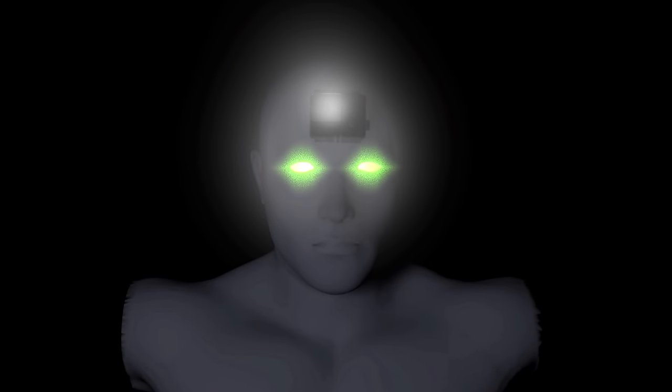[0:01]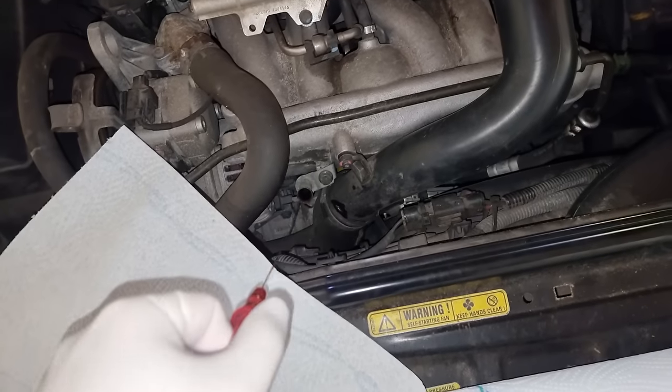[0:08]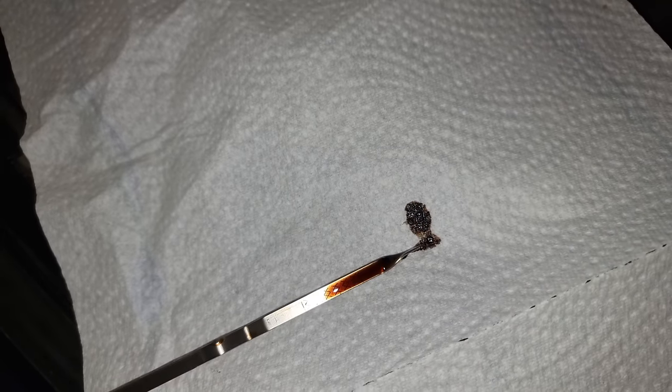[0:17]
Hey guys, I'm preparing the Volvo for a little long road trip to Switzerland, where a viewer has offered me a very interesting but non-functional laser system. I think Volvo is going to survive.
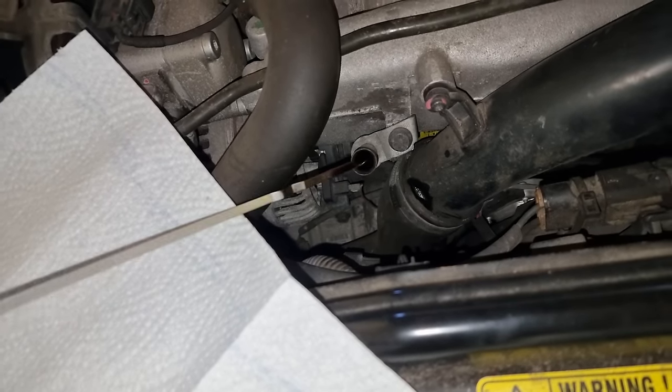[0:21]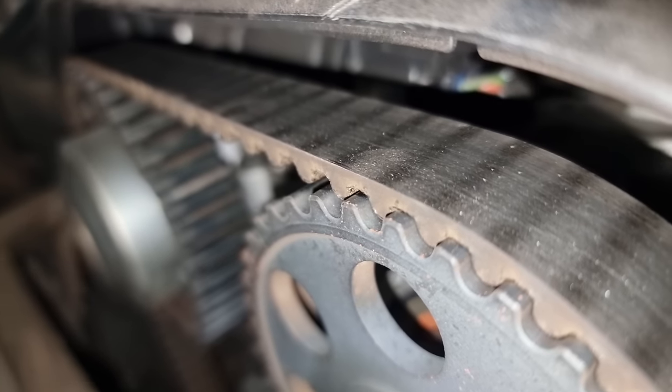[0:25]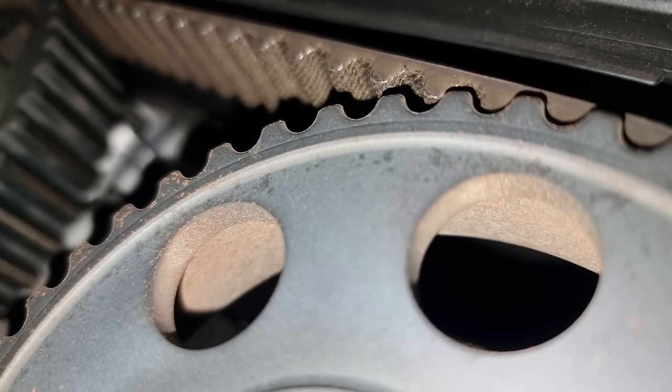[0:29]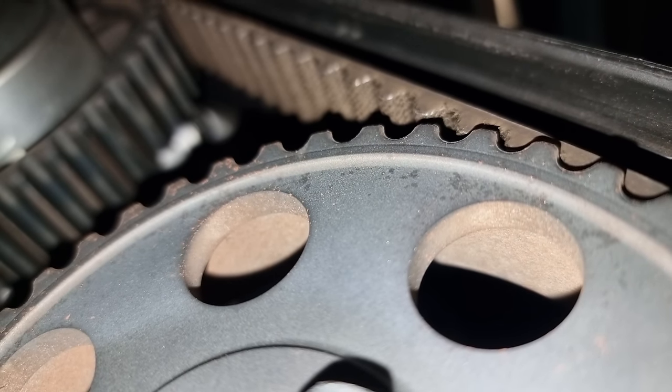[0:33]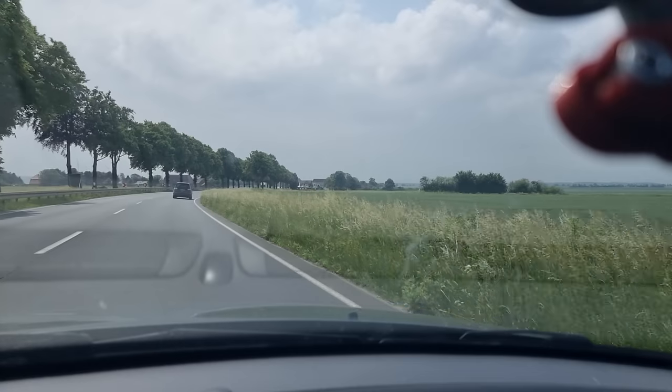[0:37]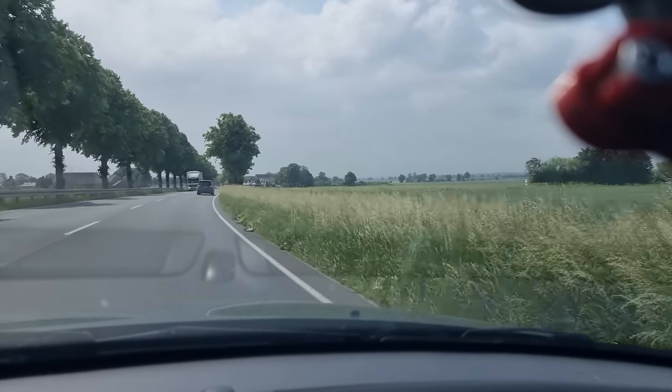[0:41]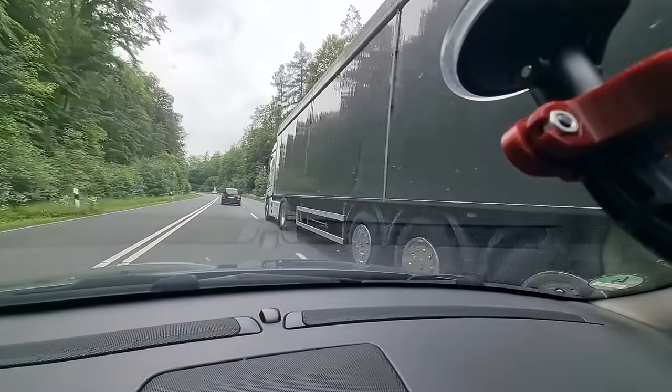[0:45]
But this part of the video happened over 2 years ago during peak COVID, and I had no idea what crazy bureaucratic hindrances might await me at an international border crossing. To make matters worse, even if I made it through one way and everything would go according to plan there, I would have to return to the European Union afterwards, with laser equipment that used to cost as much as a small house in my trunk. Surely that's not going to cause any taxation or customs issues, right?
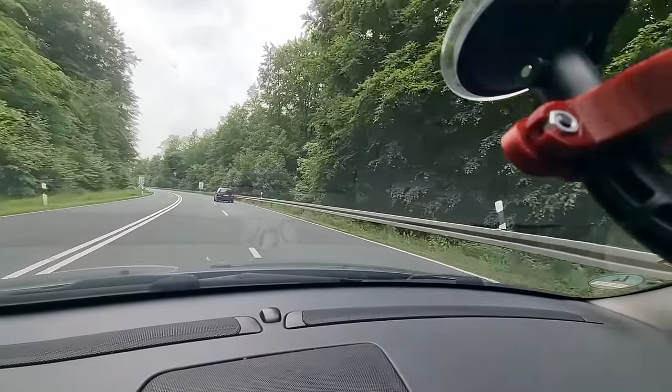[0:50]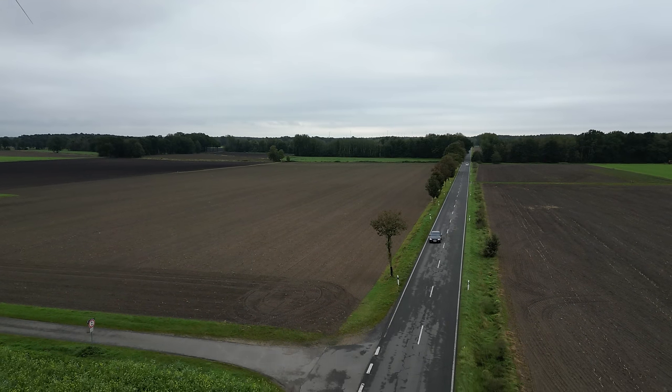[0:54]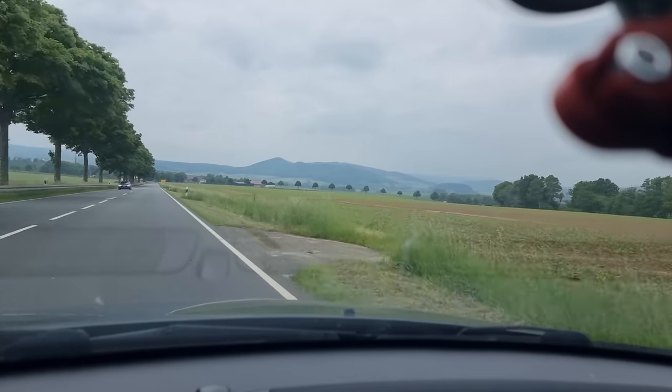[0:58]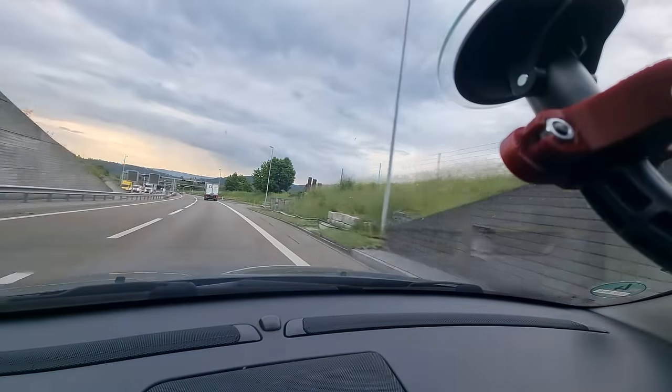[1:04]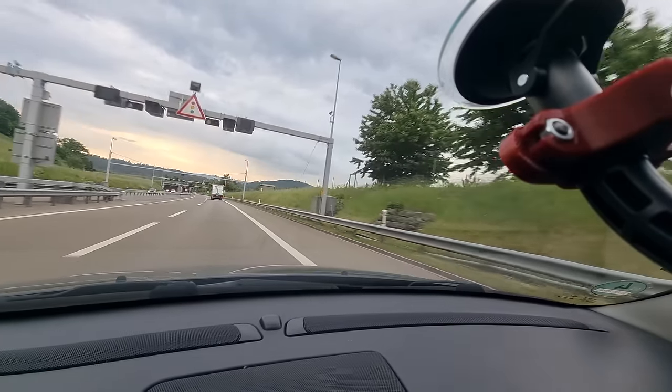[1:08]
Oh well, there's no point in worrying, is there? Although I have at least an 8-hour drive ahead of me, with little else to do. Still, I love these luxury e-waste recycling missions. How about I attempt to explain what exactly has me excited enough to set sail for such a perilous journey? Lasers. Need I say more?
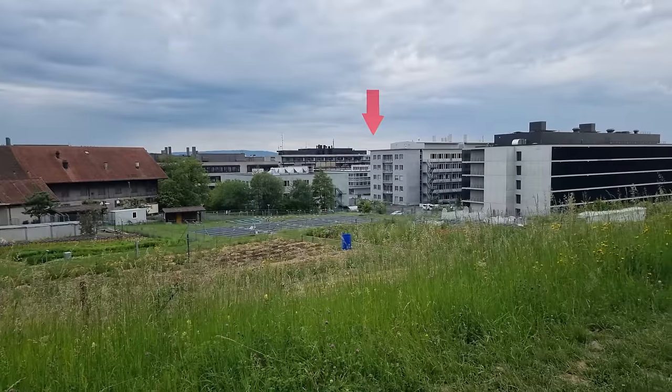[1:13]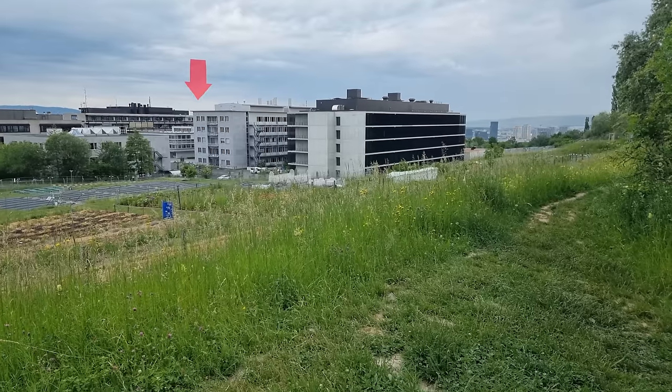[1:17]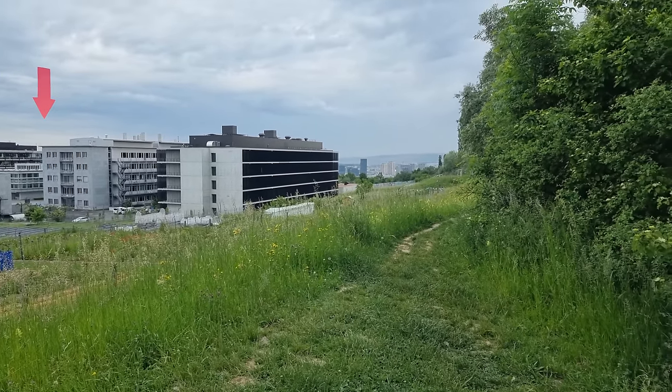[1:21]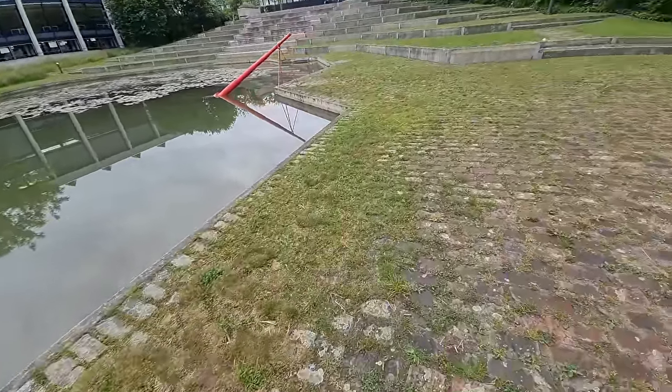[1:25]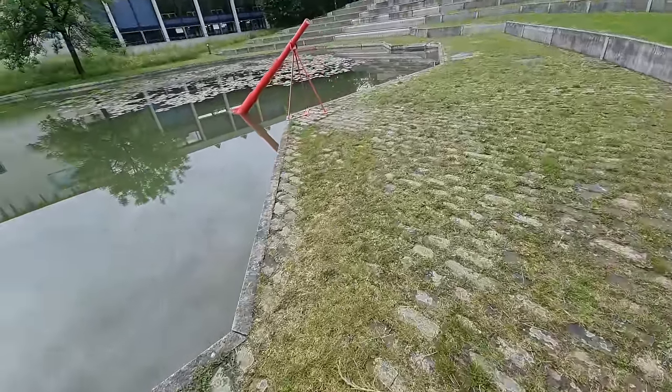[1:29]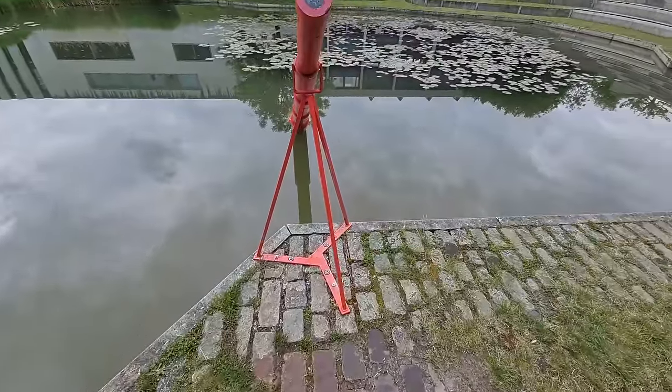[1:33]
Okay, so we're heading to a neuroscience institute at the University of Zurich. Not for treatment of a manic laser acquisition disorder, but to help a postdoc researcher with the disposal of some old broken equipment. What use have neuroscientists for fancy coherent light sources, though? I mean, where I'm concerned, nobody has to justify an interest in shiny, colorful toys or magic crystals. But I think here it's mostly about fluorescence microscopy.
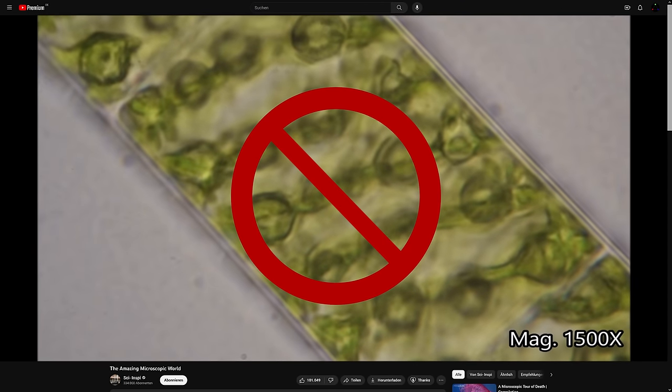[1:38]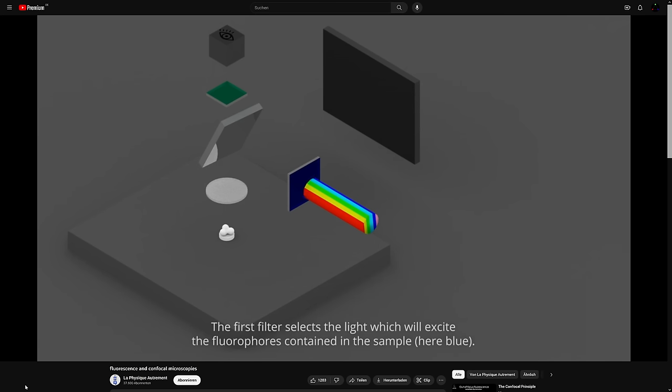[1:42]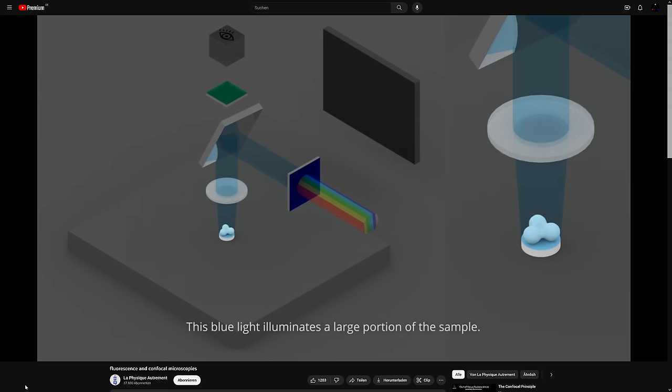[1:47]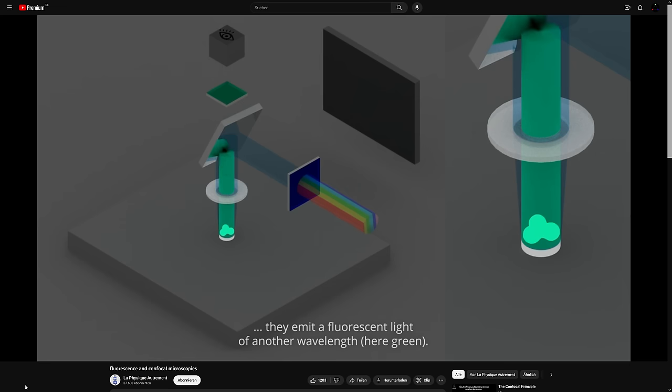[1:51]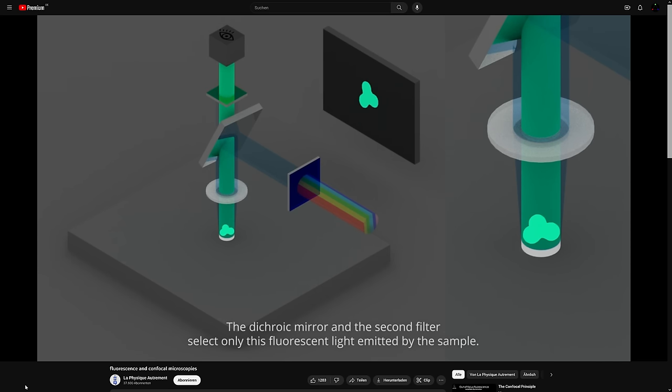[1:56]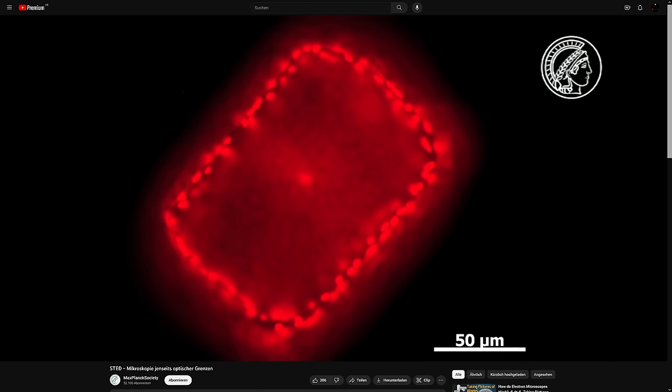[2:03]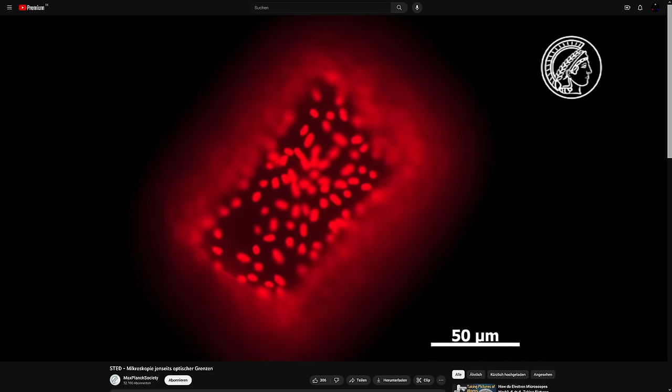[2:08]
Instead of shining broadband light onto or through a sample, one can dye it and excite that dye with a specific light wavelength. That causes the dye to emit light on its own, which a scientist can capture as a much higher contrast image. Only the re-emitted energy and therefore wavelength will be a bit lower, because a portion of the excitation energy is lost as heat. Unfortunately, samples usually have some thickness and transparency, which is why in wide-field fluorescence microscopy, out-of-focus features will also show up and cause blurriness called background fluorescence.
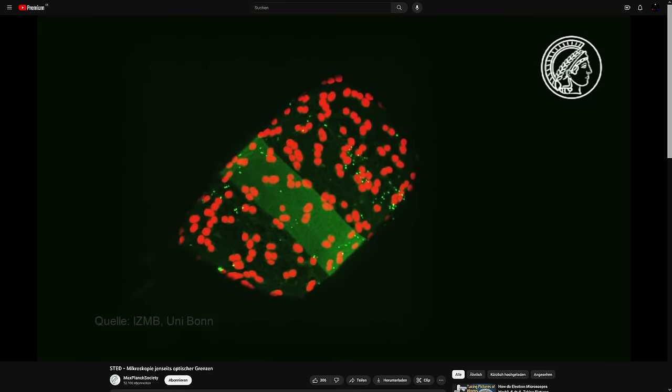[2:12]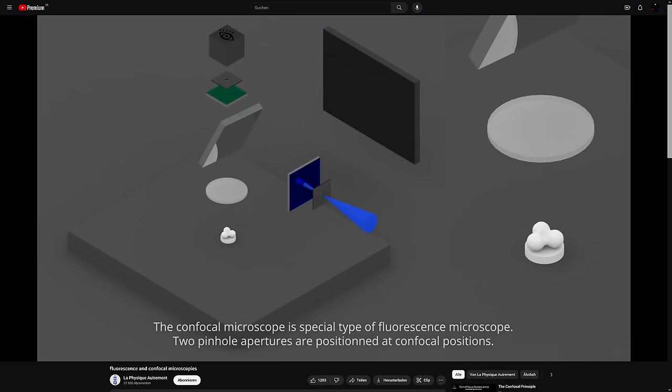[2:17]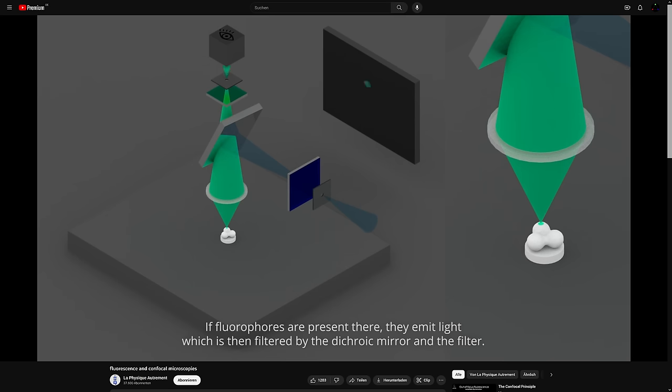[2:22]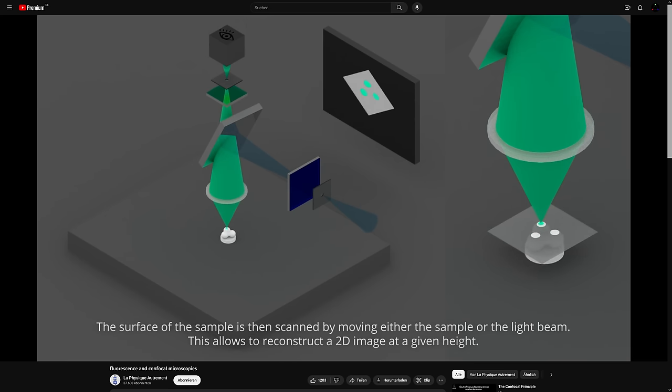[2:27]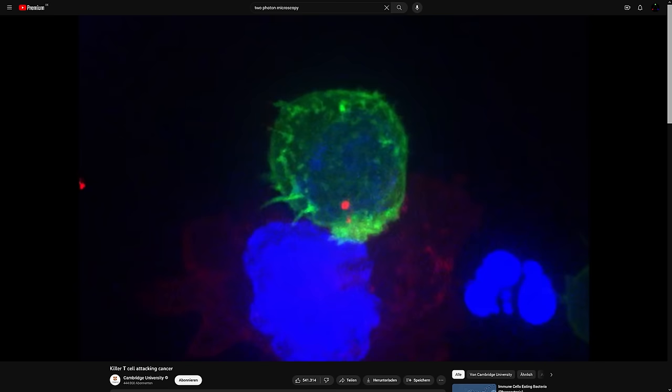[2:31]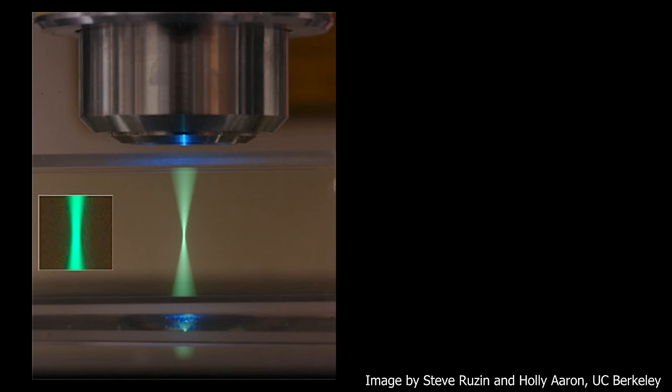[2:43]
There is an extension to this method called confocal microscopy, where pinholes are used to excite only a small volume of the specimen and to strip away all out-of-focus fluorescence. Confocal microscopy is a fairly advanced technique already, and it can yield fantastic results. It's a pointwise process though, and it takes a while to scan over samples at high resolution. Meanwhile, in order to reach deeply into a sample, the excitation is done with a fairly intense laser beam of a fairly high energy short wavelength, so that the re-emission falls into a convenient band for imaging.
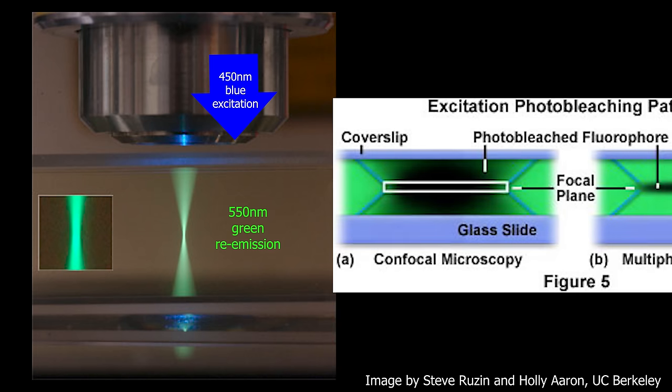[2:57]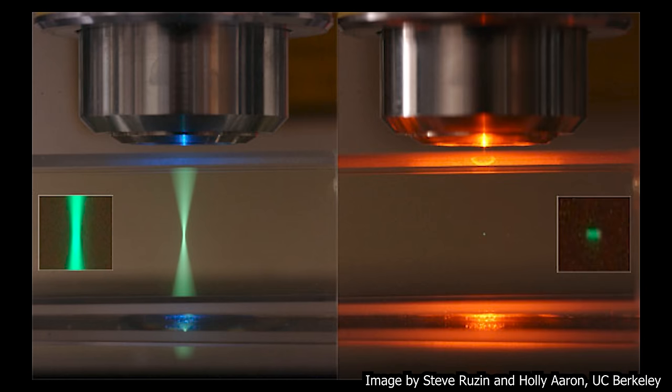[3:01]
And we all know, better than most, what happens when intense laser light touches anything, especially for a longer time. The sample can be damaged or the dye degraded, not only in the focal plane but also above and below. Wouldn't it be wonderful if we could unlock yet another improvement for this light microscopy technology tree? Well, now that you mention it, this is exactly where the laser system that has lured me all the way down to Switzerland enters the story.
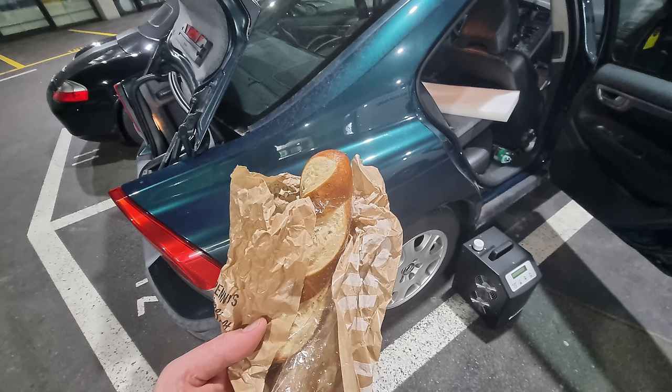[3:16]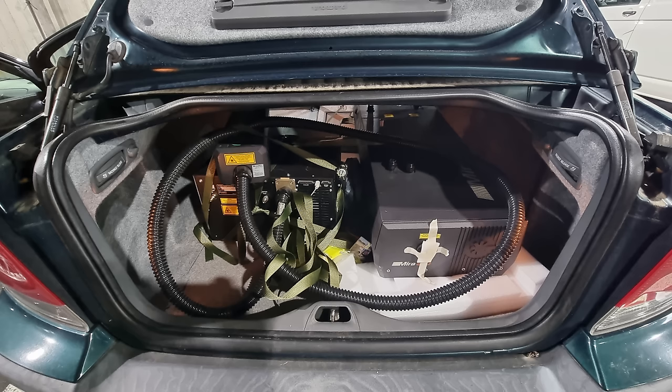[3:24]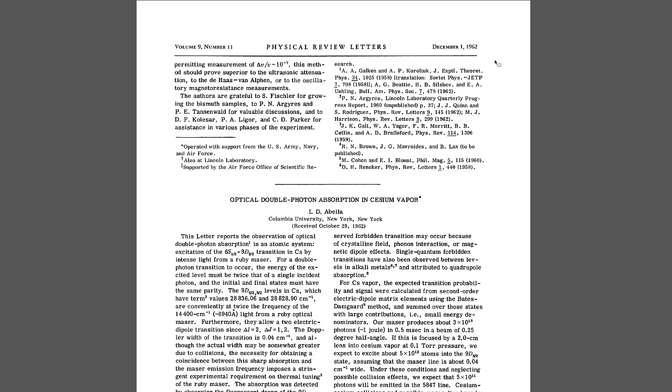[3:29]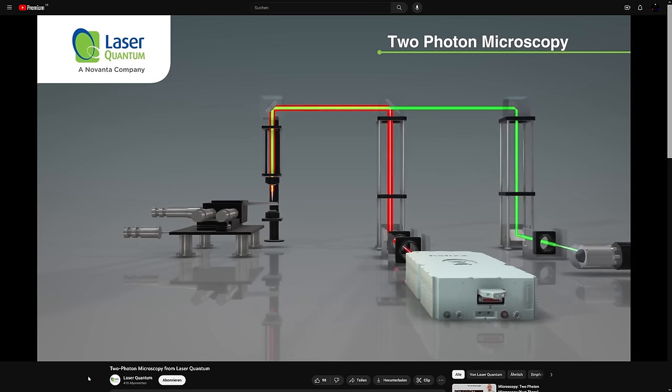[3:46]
If we can revive it, it will be able to compress laser radiation into ultra-short impulses. It may only have about a watt of average power, but compressed into less than 200 femtoseconds and focused into a small point, it can cause light intensities of mind-blowing and reality-shattering proportions. Well, reality has probably always worked this way, but it has only been confirmed in the 60s that at such high intensities a molecule, such as a dye or other interesting stuff, has a chance to be excited by two photons that arrive in close enough succession.
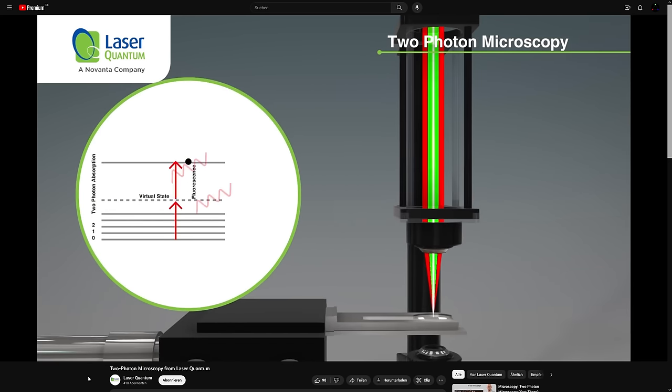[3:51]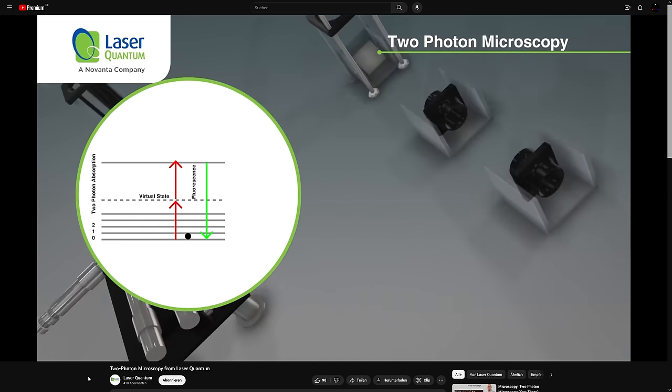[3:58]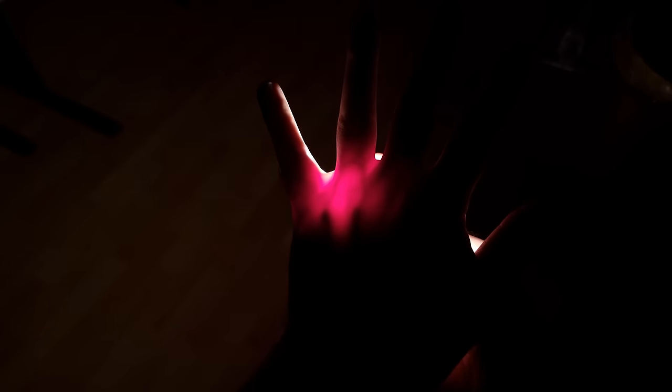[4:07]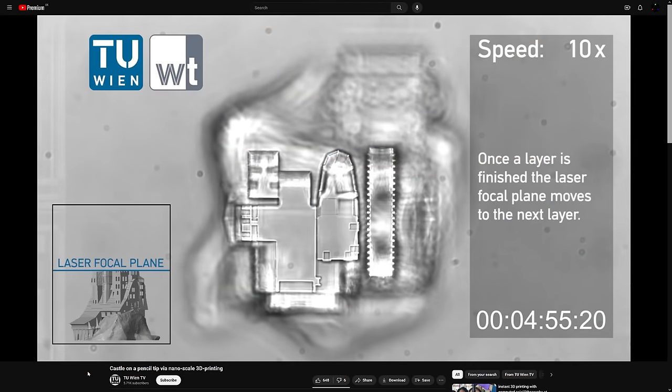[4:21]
If that happens, the molecule receives the energy of both photons, just as if it had absorbed a photon of twice the energy or half the wavelength. The implications for fluorescence microscopy are fantastic. We can now send ultra-short infrared impulses into a sample, which are least encumbered by biological tissues. Only in the focal point, deep within the sample, where the intensity is at its maximum, do two-photon absorptions happen, as if there was blue, half-wavelength, twice-energy excitation light there. No photobleaching and much lower risk of sample damage elsewhere.
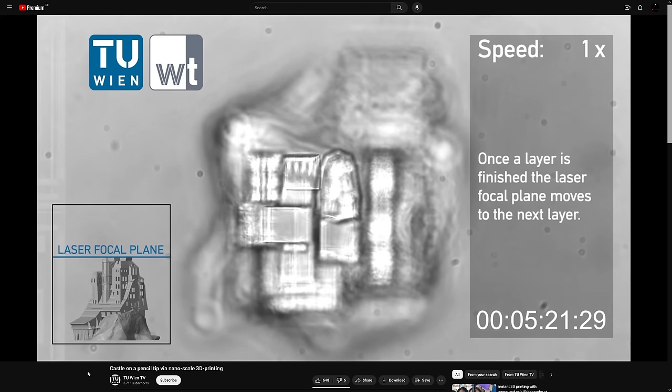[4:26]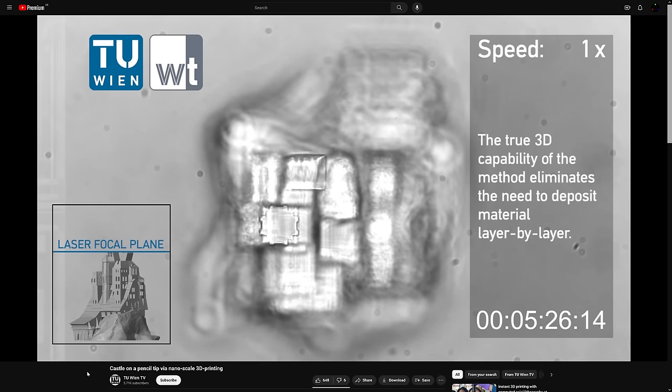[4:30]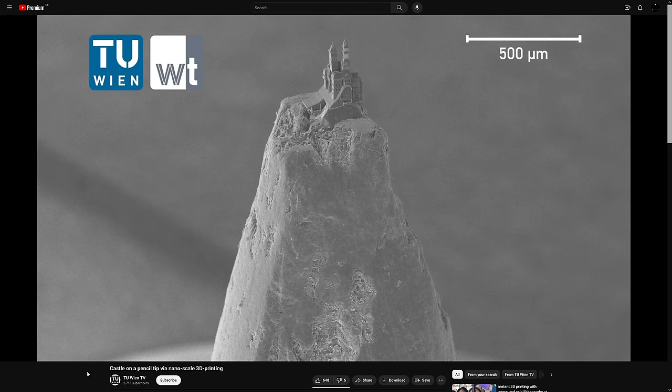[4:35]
Or we could trigger polymerization of UV-sensitive 3D printer resin, simply in the middle of a vat without repeated peeling and wasteful support structures. But let's not get ahead of ourselves too far. There are a few tricky problems in the way.
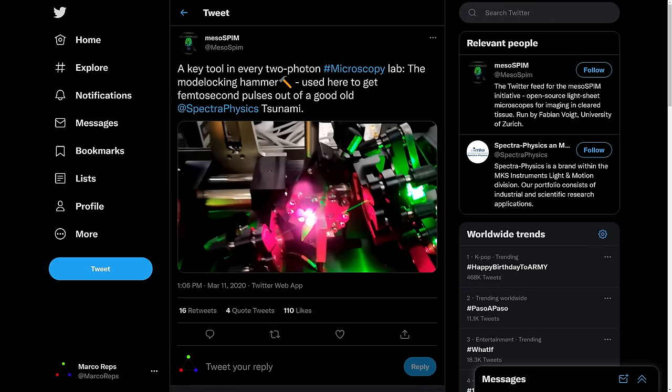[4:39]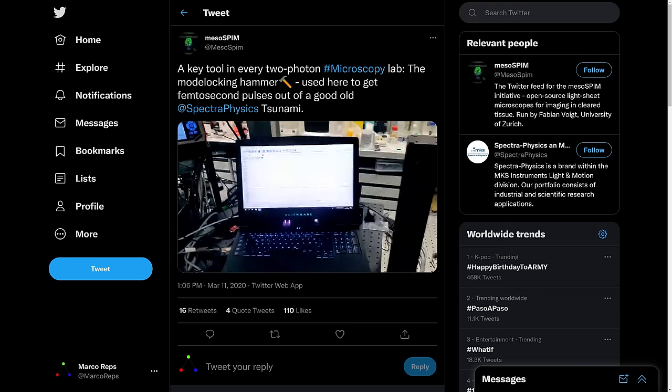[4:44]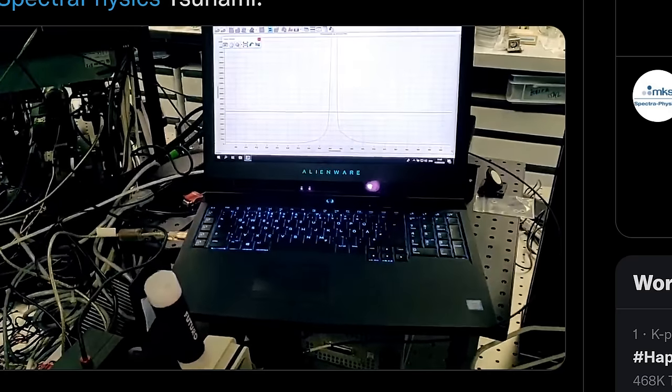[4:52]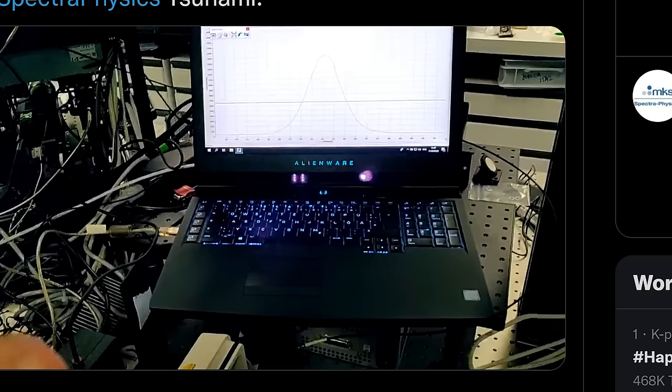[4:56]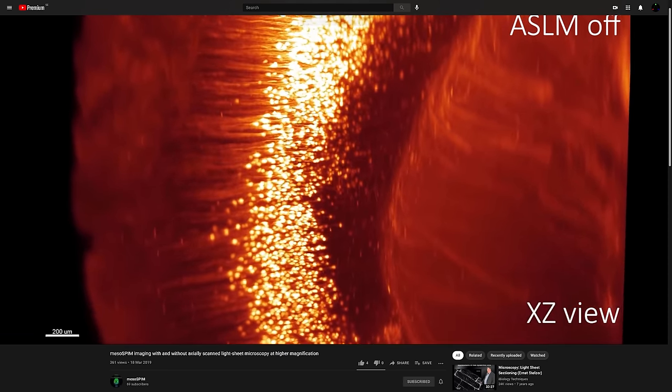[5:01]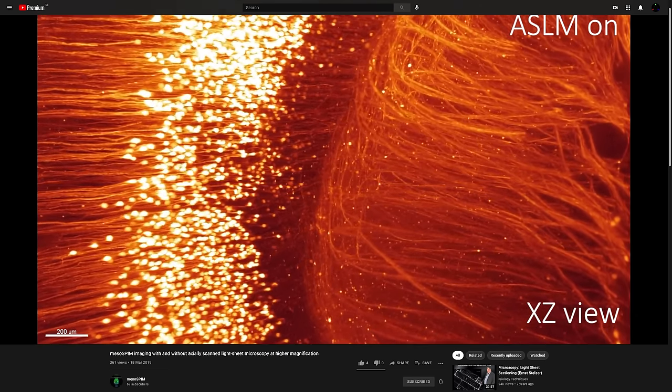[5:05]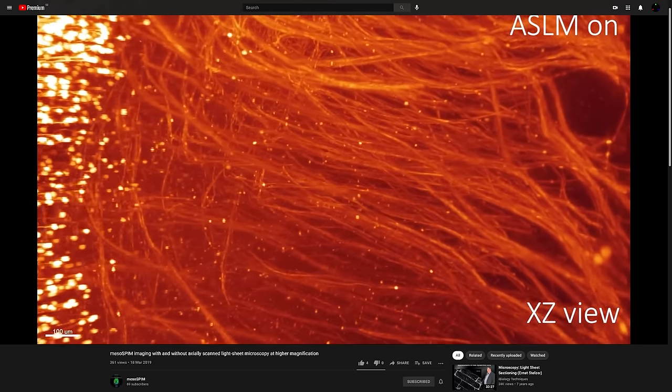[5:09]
He's now a Human Frontier Science Program Fellow and working at Harvard on leading-edge neuroscience and imaging tools. He has also initiated an open-source hardware light sheet microscope, making faster 3D imaging of cleared tissues available to scientists all over the world. I'll leave a couple of links to his work below if anybody has developed a taste for life science.
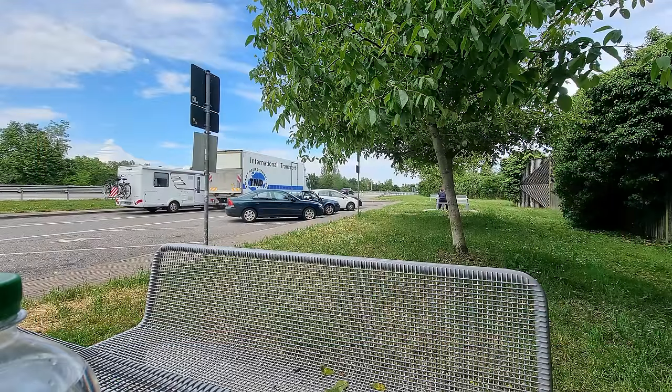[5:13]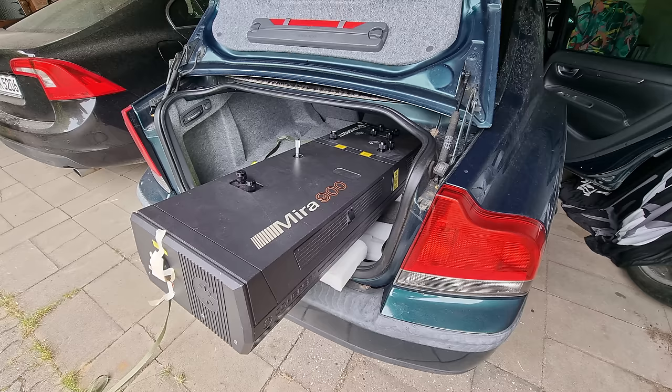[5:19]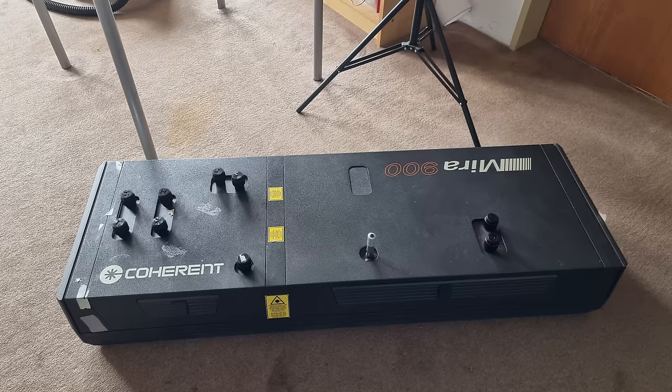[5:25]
Personally, I think I'm going to stick with e-waste recycling for the foreseeable future. My journey through customs and back home was blissfully uneventful. And so, finally, after 5 minutes of incoherent rambling, we can get to the point.
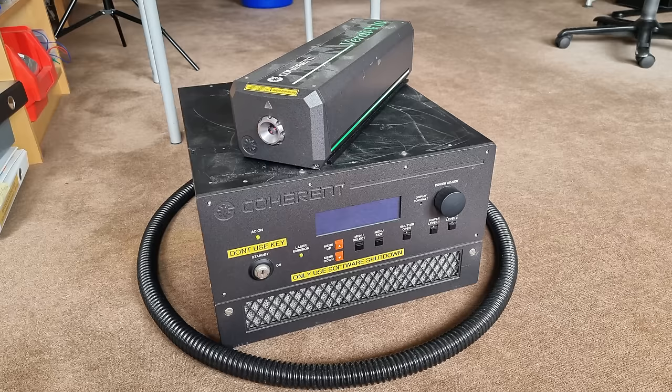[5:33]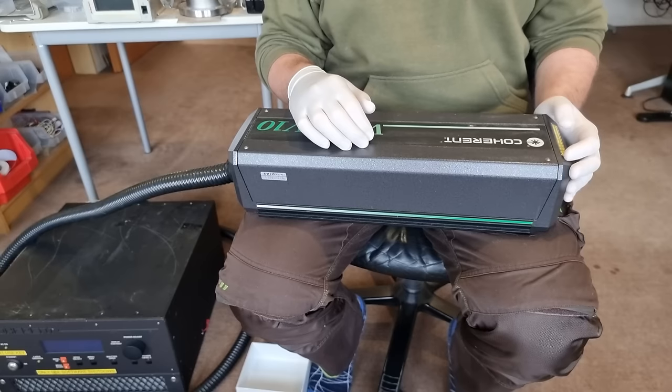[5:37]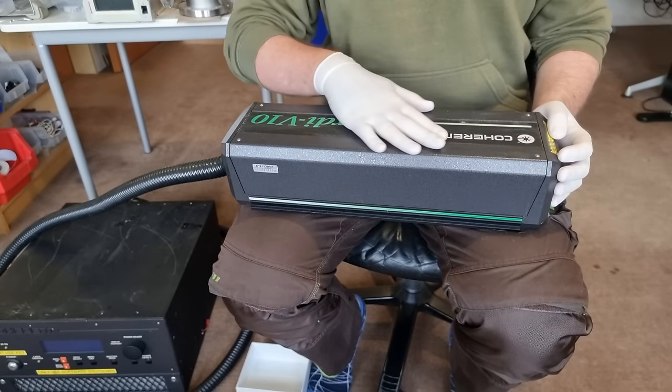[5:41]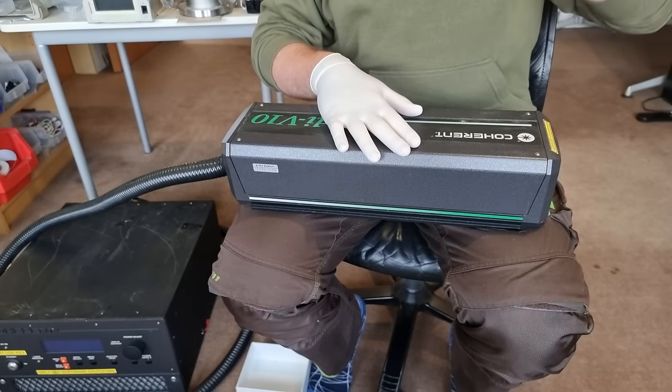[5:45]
This is the loot, a Mira 900 ultra-fast titanium sapphire tunable laser, and a Verdi V10 solid-state continuous wave green pump source. These two belong on an optical bench together, and then this baby is supposed to put out a few watts of spectrally pure green light to pump the magic crystal in the other box. Let's focus on this Coherent Verdi V10 today.
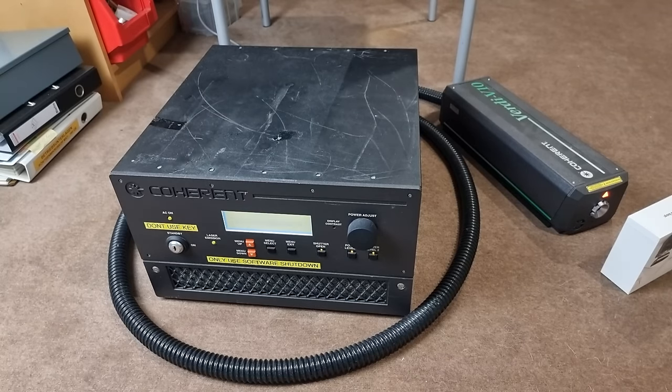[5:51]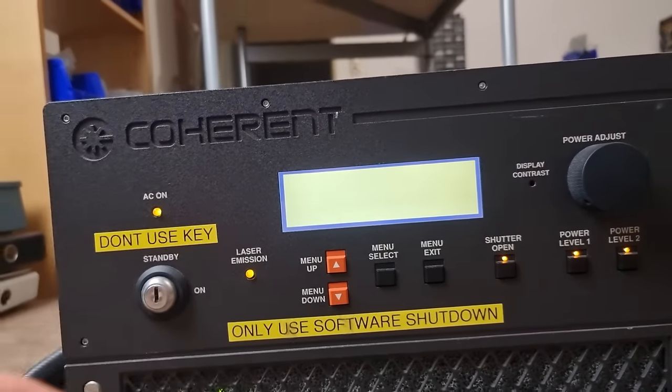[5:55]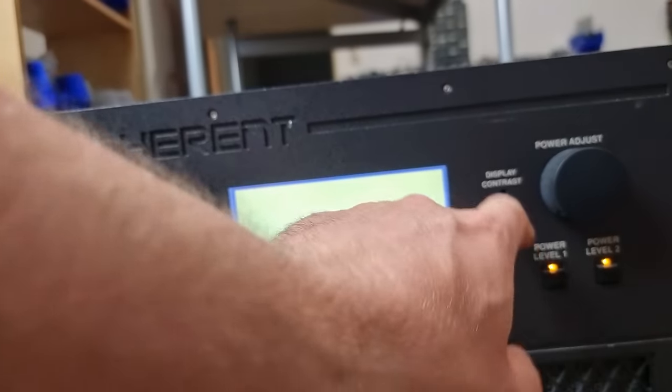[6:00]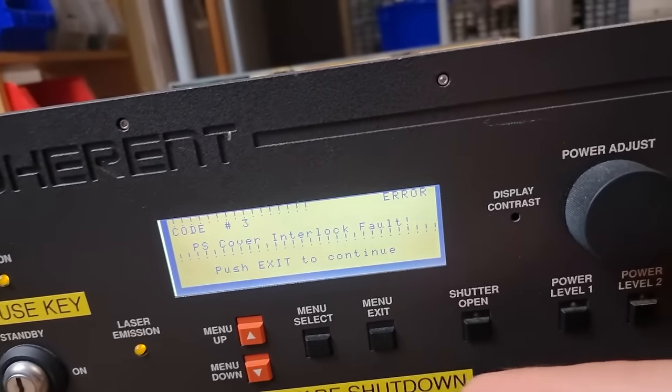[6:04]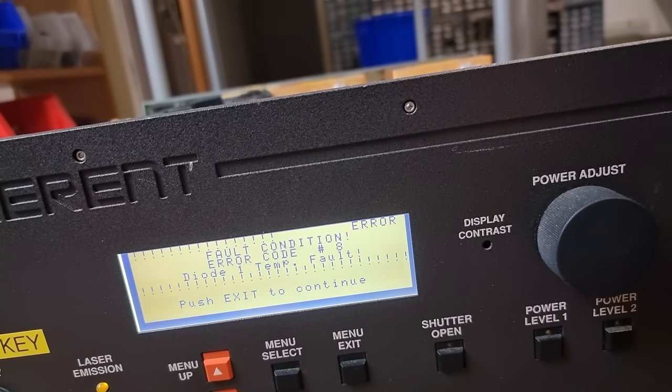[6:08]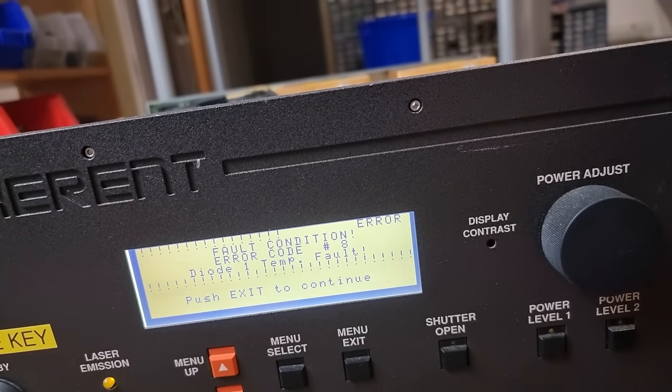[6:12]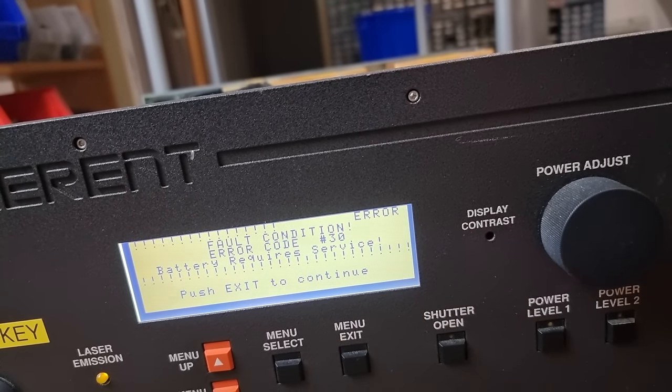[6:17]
It is not happy. If I remember correctly, it was already destined to be scrapped before the neuroscience department adopted and revived it. Now it doesn't display anything anymore most of the time, and if it does, it's throwing its entire repertoire of error codes at me. Whoa, take it easy with the exclamation marks, buddy. This is good though. Electrical problems are the ones I can fix. It could also have damaged obscure optical components in the head. That would be more challenging.
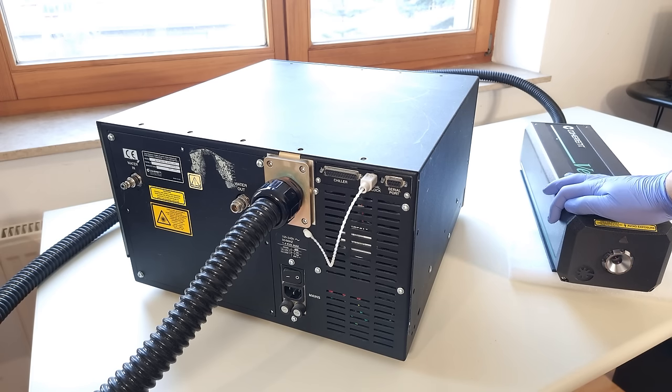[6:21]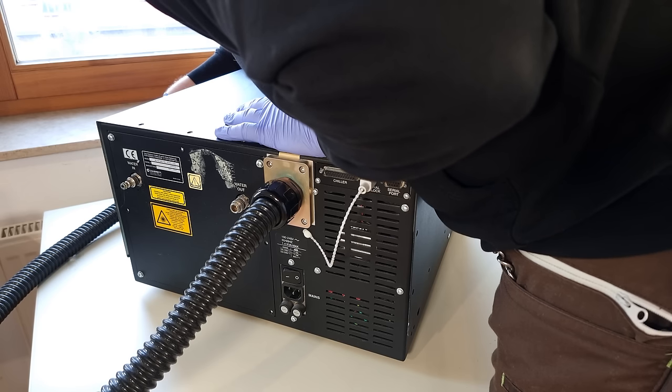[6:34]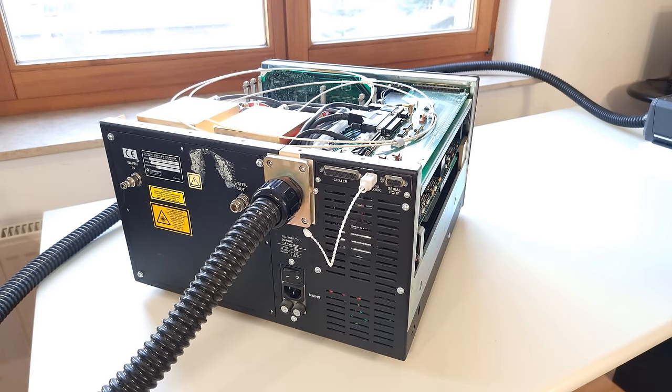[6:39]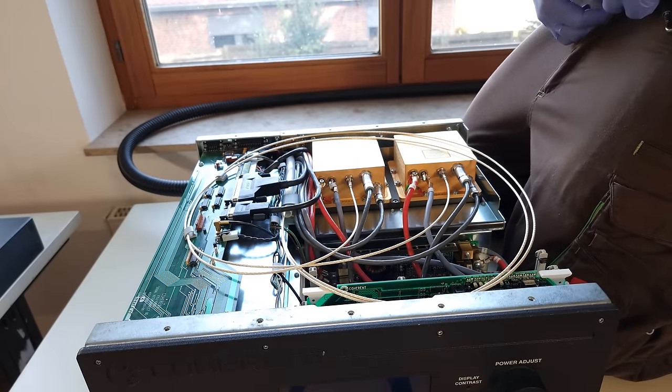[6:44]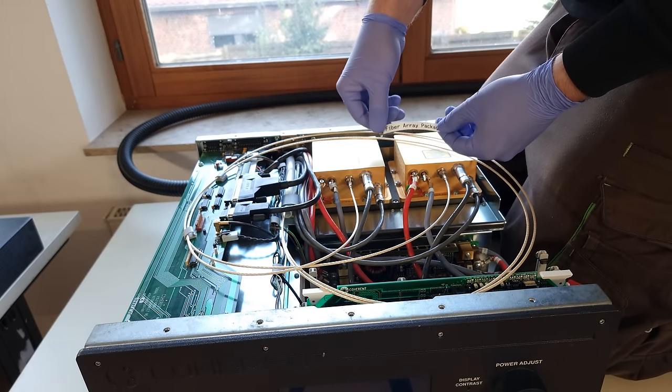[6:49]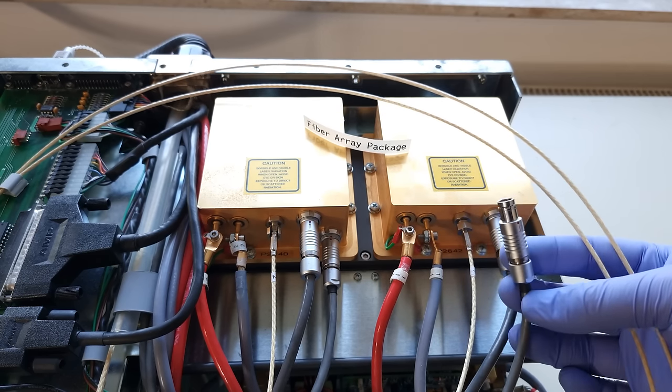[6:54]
The head is attached to the control box with a thick umbilical cord. The manual goes to great lengths to explain that there's a minimal bend radius for that. So I suppose there are optical fibers in there, maybe also cooling fluid? Oh, would you look at these huge fiber-coupled laser diodes? Coherent is calling them FAPs for obvious reasons. Fiber array packages. And these are going to end pump a laser resonator in the head, with lots of infrared power through fiber optic cables, thus generating the green output, somehow.
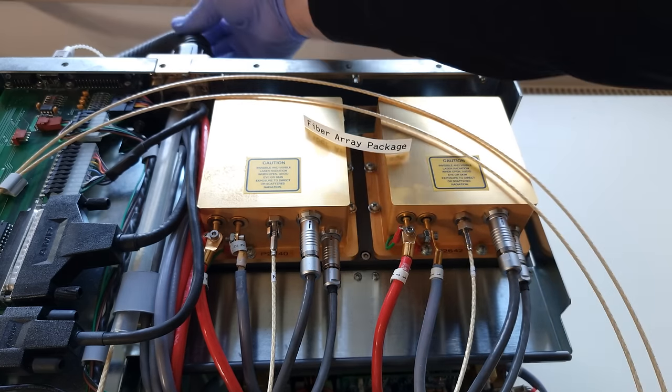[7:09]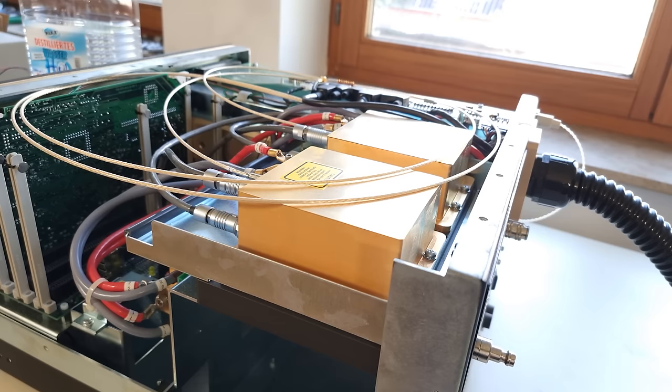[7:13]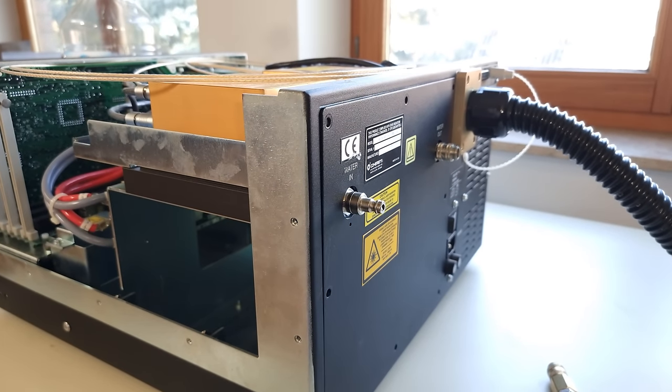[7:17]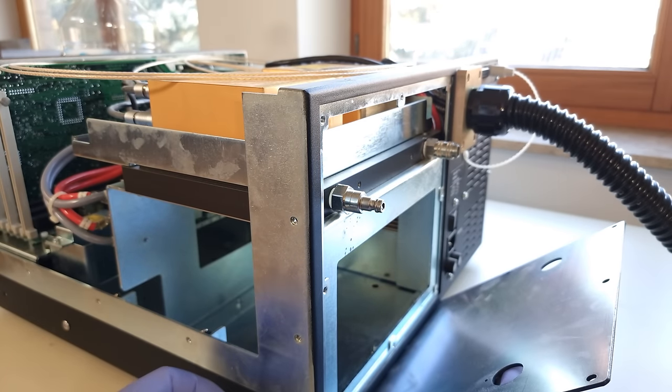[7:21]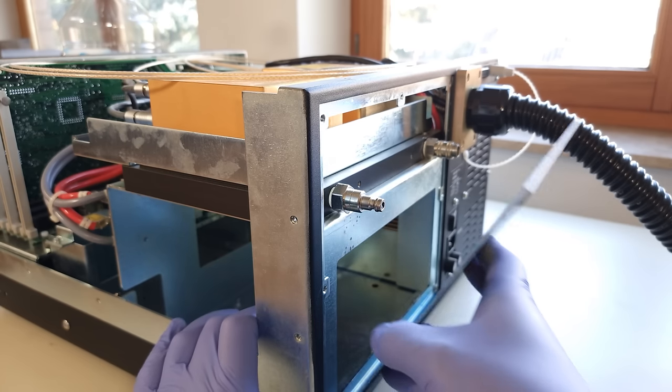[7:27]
They need very high currents in the order of 30 amperes each, at roughly 1.7 volts forward voltage. So they receive lots of electrical power and convert less than half of that into light. The remaining waste heat has to be removed from these golden packages very effectively and precisely, because they have significant temperature coefficients on output power and wavelength, both of which have to be super stable for optimal performance. So these are sitting on integrated Peltier modules, and those in turn are water-cooled.
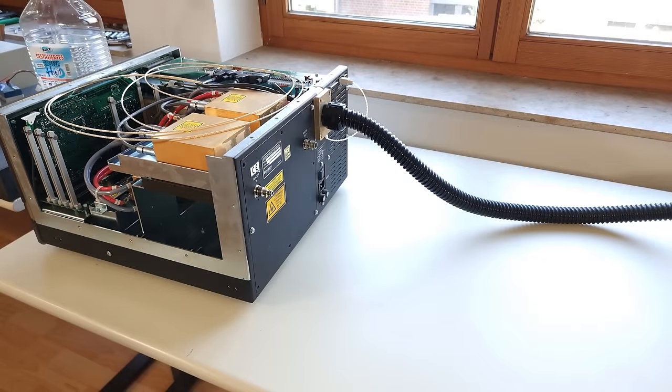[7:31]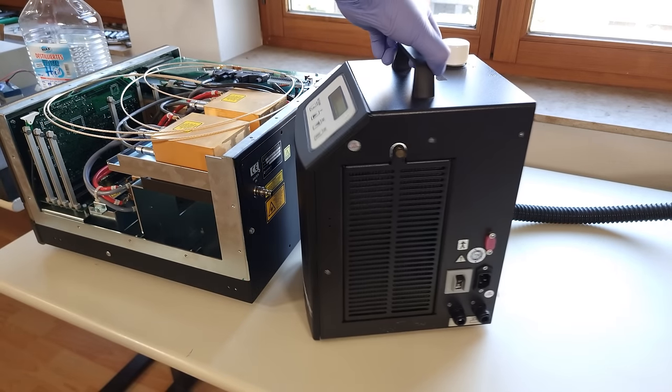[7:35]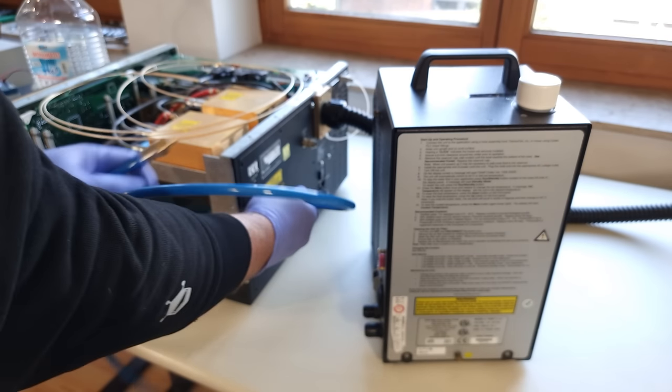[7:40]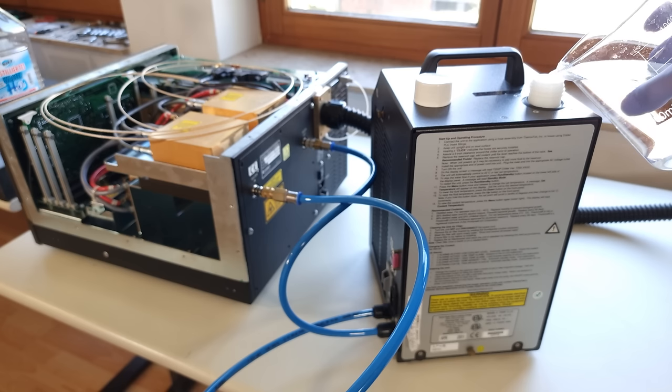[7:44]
No cooling water seems to be routed down the umbilical cord. This Coherent-branded ThermoTek water chiller that I got together with the lasers is a pretty fancy Peltier-based model too. It can stabilize its water temperature bidirectionally through heating and cooling. I kinda wish I had another one of those for my CNC spindle.
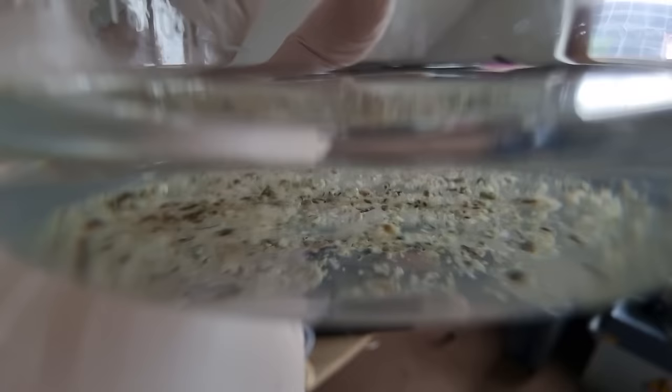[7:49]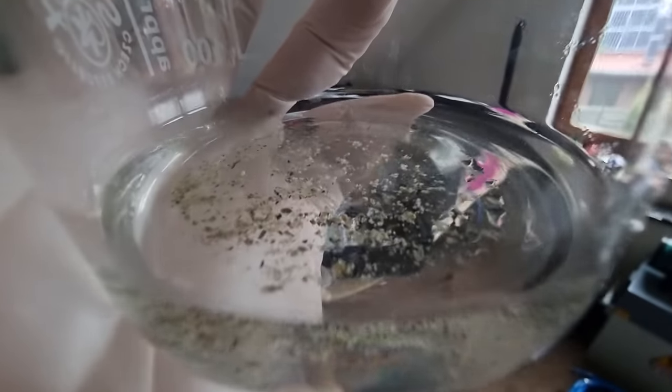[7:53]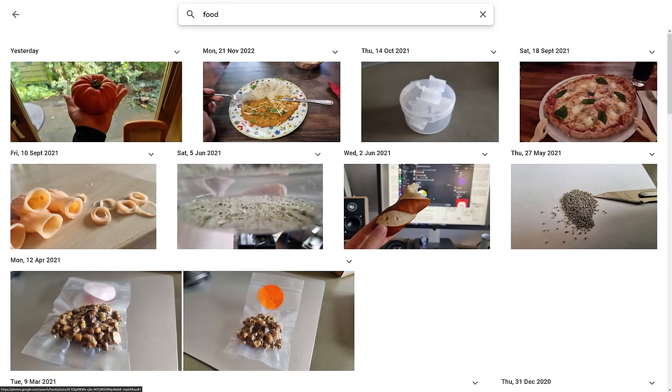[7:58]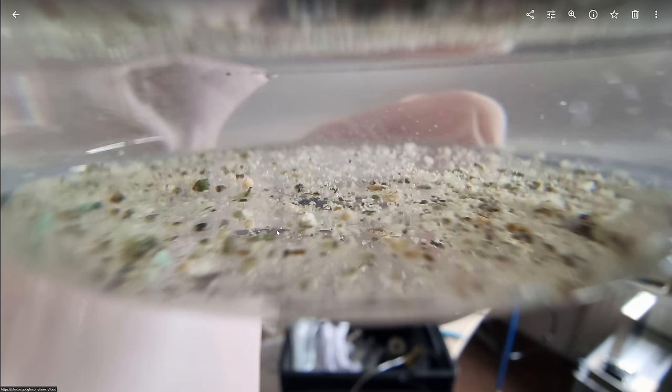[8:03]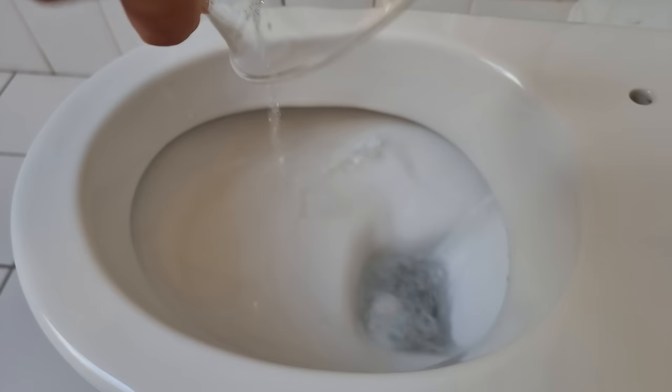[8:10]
Unfortunately, it seems to be infested with some strangely resilient form of algae that seems to thrive even in darkness and distilled water. Google thinks it's food. Who knows, maybe it can solve world hunger or feed generation starships. Or it's a dangerous escaped experiment from some neuroscience institute. Oh well, I'm not entirely opposed to having a world domination bioweapon live in my toilet. But I'll keep flushing and refilling the chiller with distilled water and a lacing of alcohol. Hopefully that'll put a stop to whatever is growing in there, lest I have to resort to UVC irradiation or something.
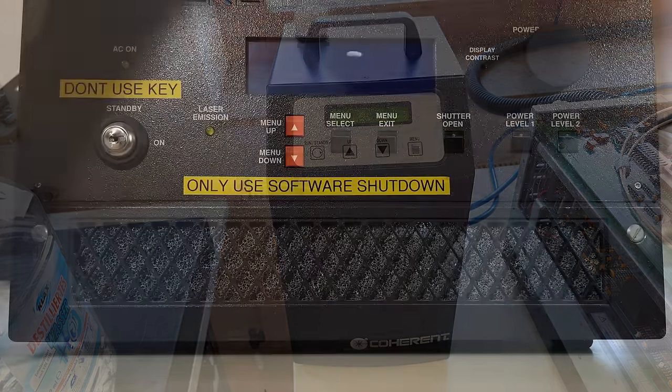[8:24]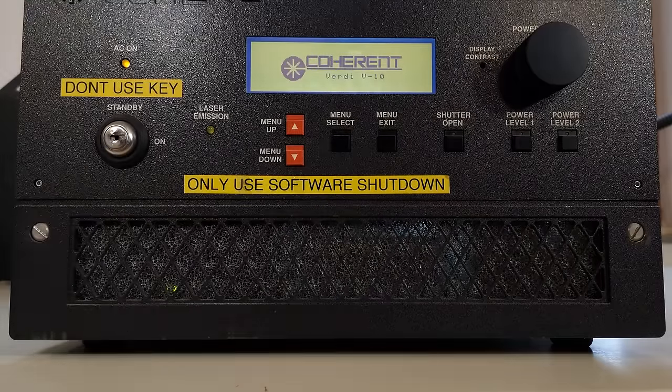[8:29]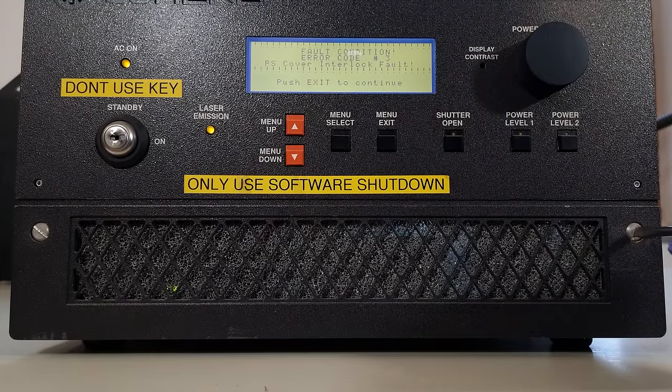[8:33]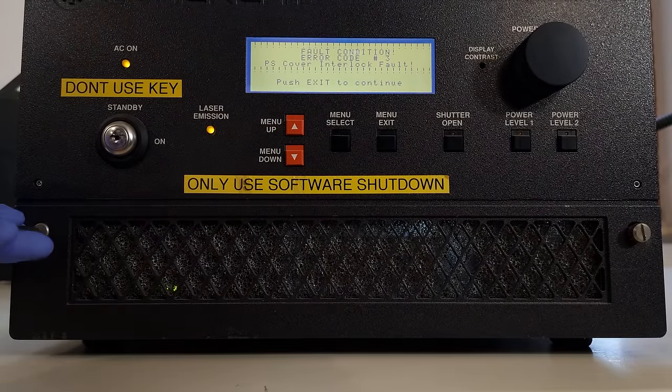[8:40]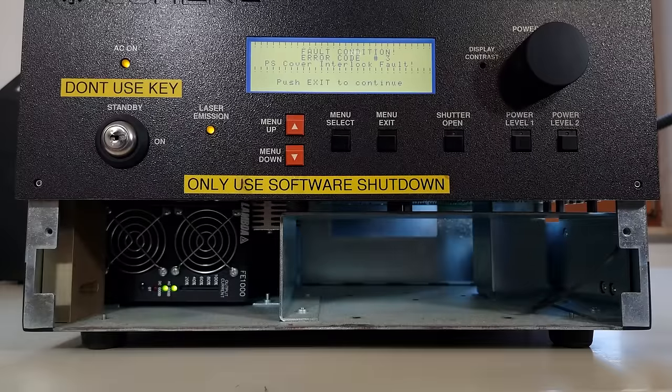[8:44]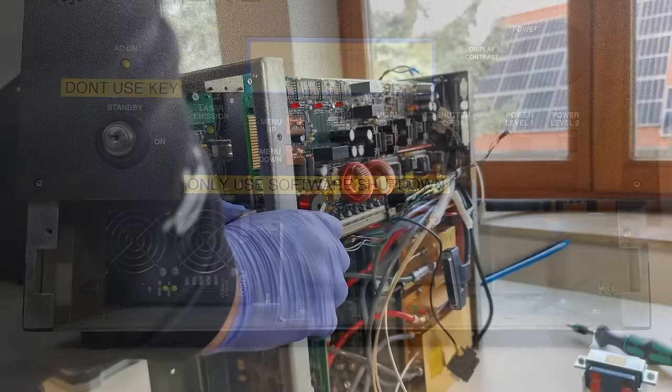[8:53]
Anyway, the two huge pumping diodes at the Verdi's core need precisely controlled very high currents at very low voltages. The two separate thermoelectric coolers underneath them have similar requirements. And then there are at least two more Peltiers in the head for optical components. Meanwhile, the whole machine is powered by a single output 48-volt switching power supply, so a fairly high voltage. That means that there has to be some intense power conversion going on. And I feel like that is interesting enough to justify a closer look.
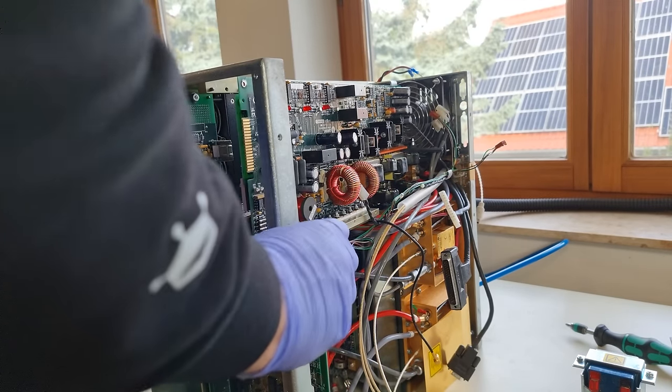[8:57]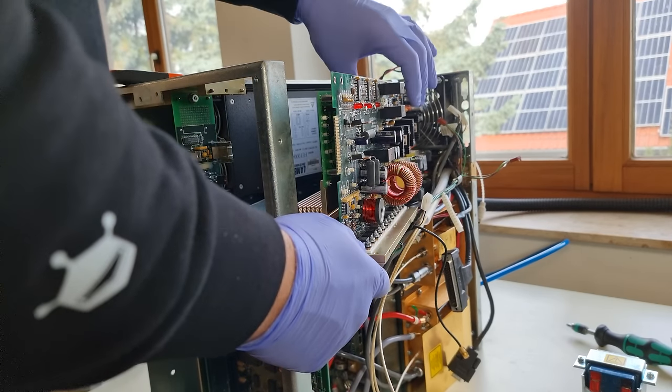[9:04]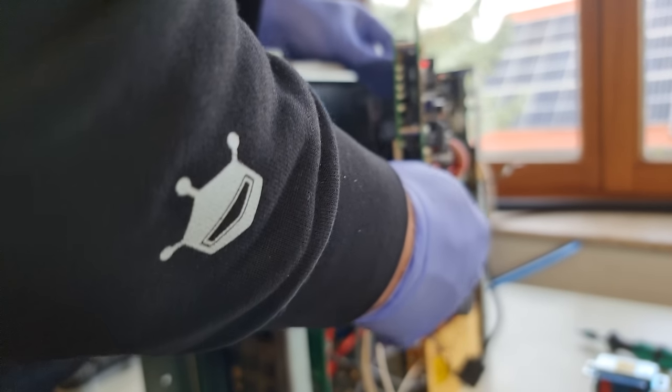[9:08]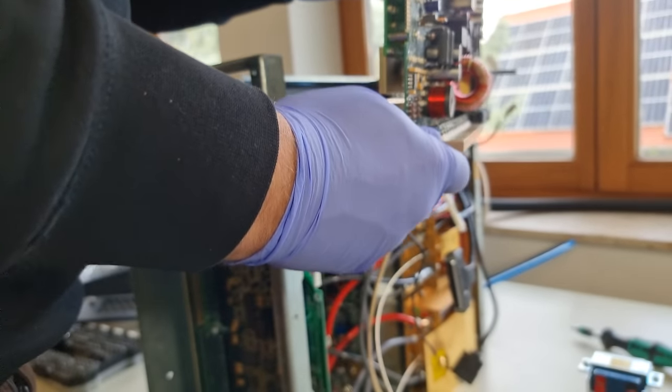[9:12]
After all, high-power pumping diodes are occasionally available on eBay. And I'm still getting inquiries about my silly DC-to-DC converter-based laser diode driver from way back in the day. Let's see if we can find out how it's done professionally. Maybe someone can put this arcane knowledge to good use.
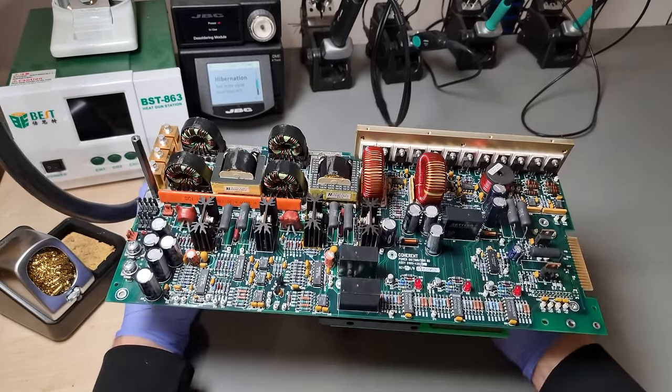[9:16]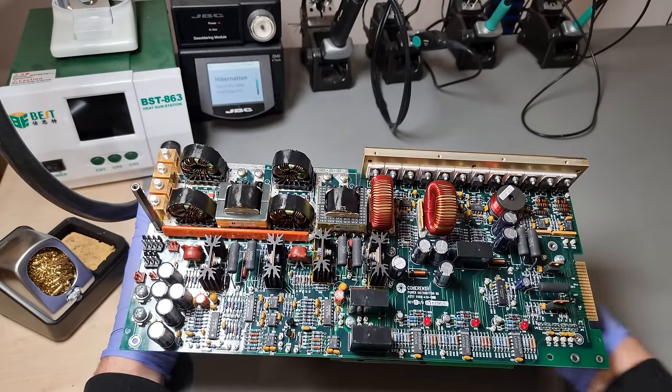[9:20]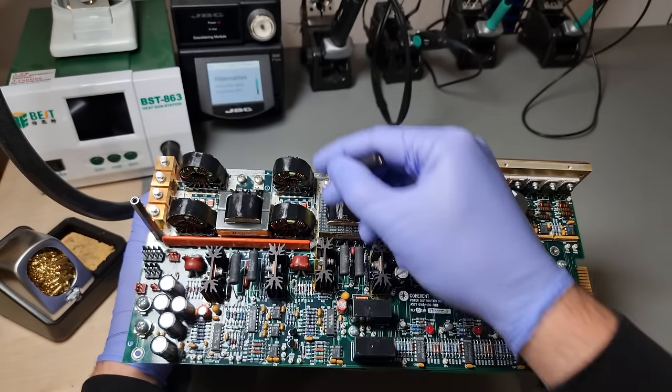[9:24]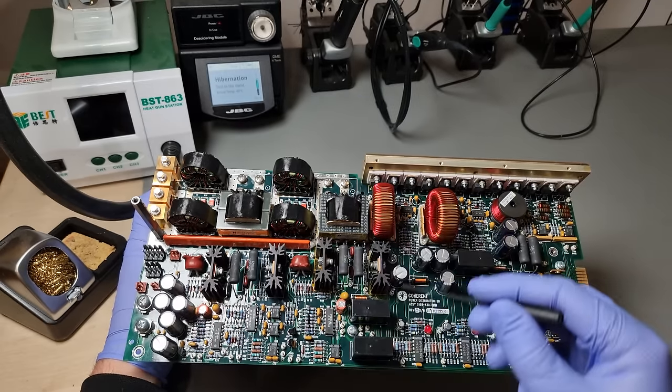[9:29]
This is the center of power and the center of mass. Immediately it stands out how this board is built from functional blocks, a few of them similar to one another. The two biggest sections that take up the entire left half of the board are obviously the over 30 ampere constant current drivers. Then there are two smaller subcircuits which need these large toroidal inductors.
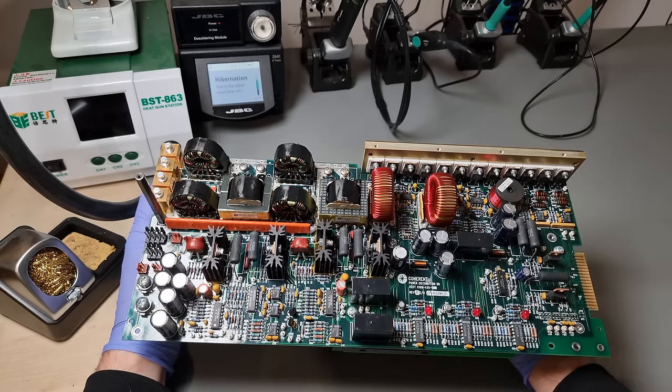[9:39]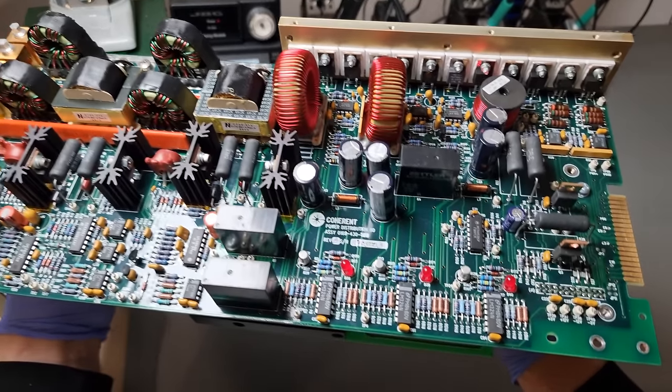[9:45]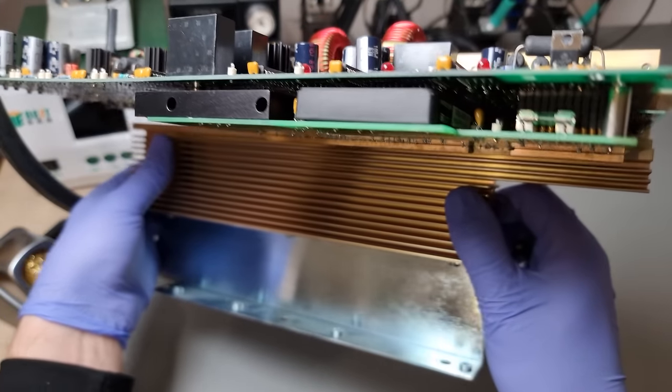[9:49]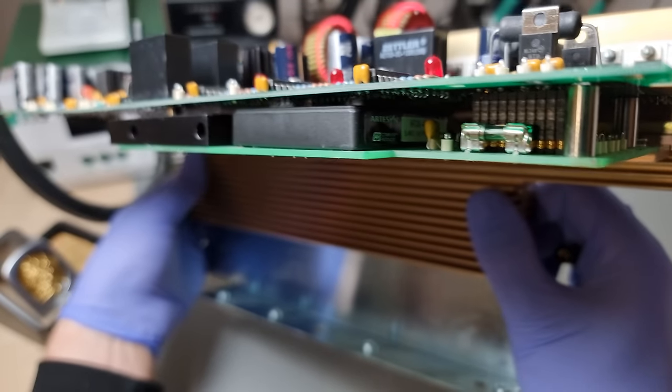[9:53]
If I had to guess, I'd say those are for the Peltiers underneath the pumping diodes, which mustn't be driven with a PWM output directly, but need some smoothing. There are more thermoelectric coolers in the head, but those don't need to be as powerful, so they don't stand out as much. I've started to reverse engineer what seemed to me like the most useful subcircuit.
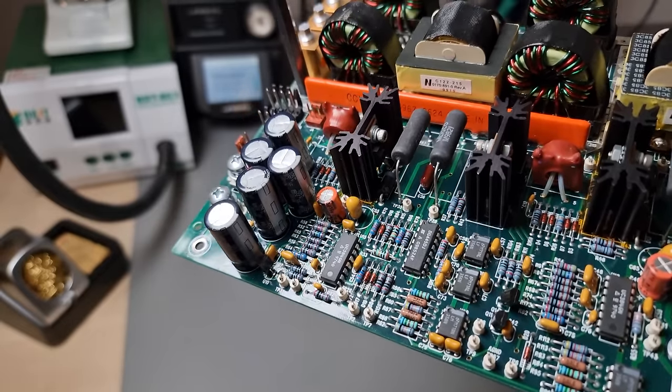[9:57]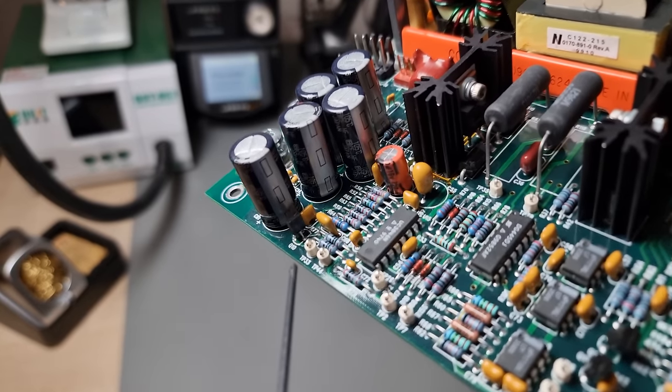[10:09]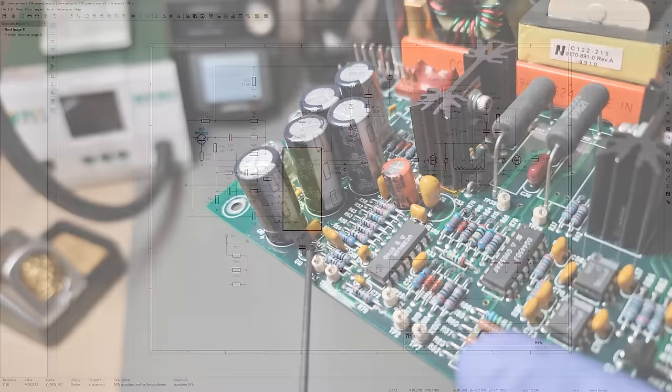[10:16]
One of the two high current FAP drivers. I was able to get a general idea of what's going on here. But what the designer is doing with this PWM driver IC is weird. And when I stumbled over this transistor with the base connected to the oscillator frequency programming capacitor pin, I knew I had to stop to prevent brain damage. So the control and feedback side is not complete all the way down to the last detail.
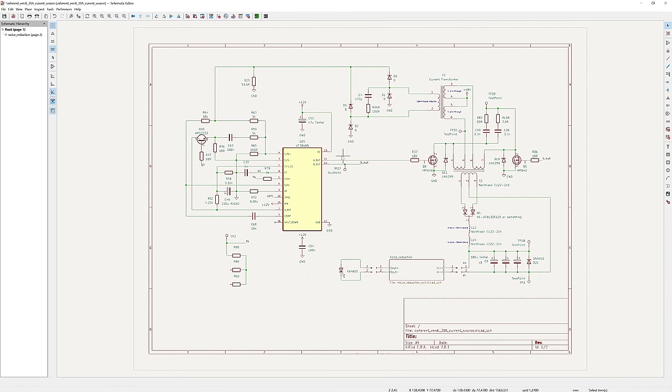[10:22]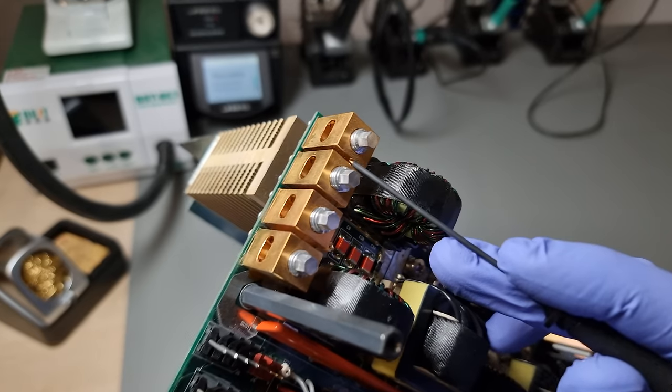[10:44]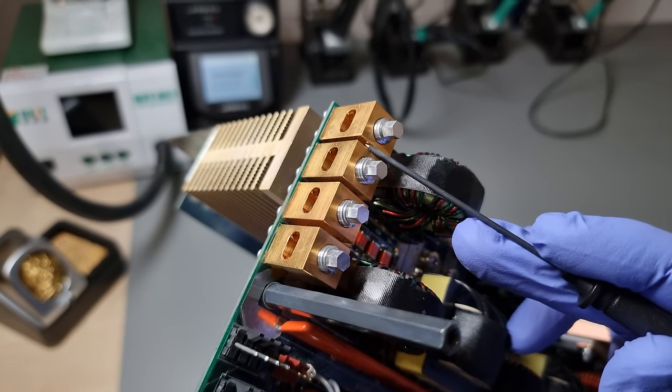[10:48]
But most importantly, this PWM controller drives these power MOSFETs alternatingly, sending the 48 volt back and forth through a custom DC to DC transformer. I would estimate a roughly 20:1 turn ratio in there, for a much lower output voltage with huge ampacity. Followed by rectification and smoothing, and that's basically it for this board. Then all the amperes leave through these gorgeous golden screw terminals, for a separate noise reduction circuit board.
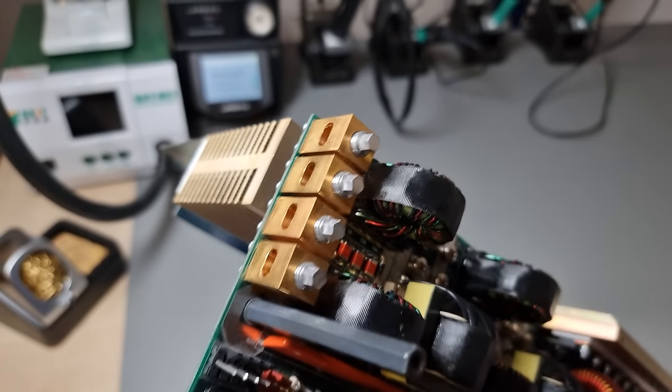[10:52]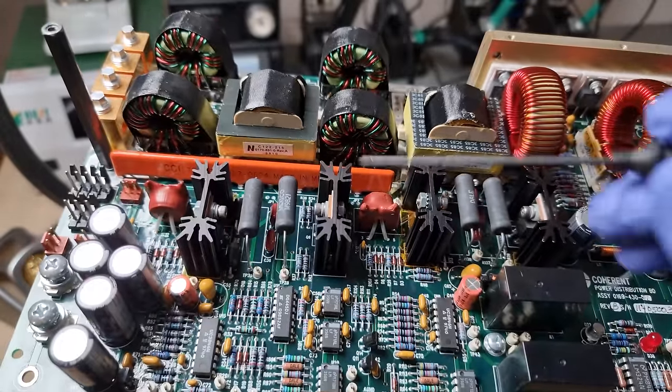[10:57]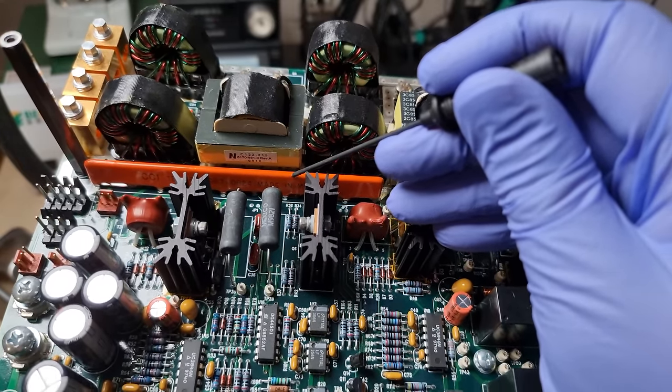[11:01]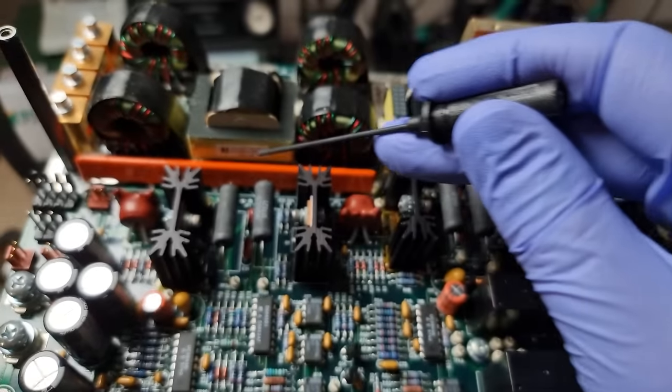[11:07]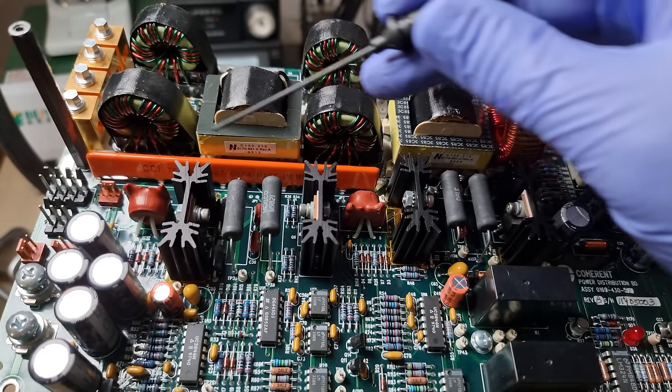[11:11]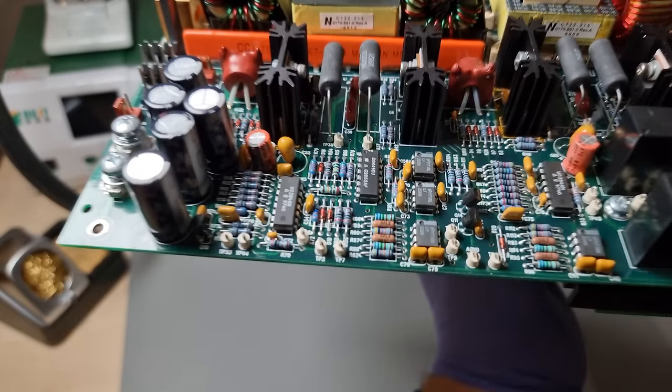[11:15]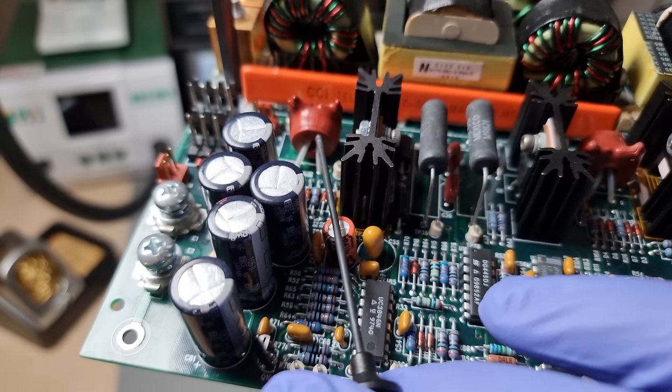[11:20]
It took me a minute to figure out what this long orange component is. CCI might be the manufacturer Circuit Components, which is no longer in business. Perhaps that's because they only printed their phone numbers on parts, instead of a unique identifier, so customers had a hard time reordering from them. I don't know. But through systematic poking around, I found out that this is actually a dual bus bar that brings the high current from the other converter to the output terminals without needing excessive PCB traces.
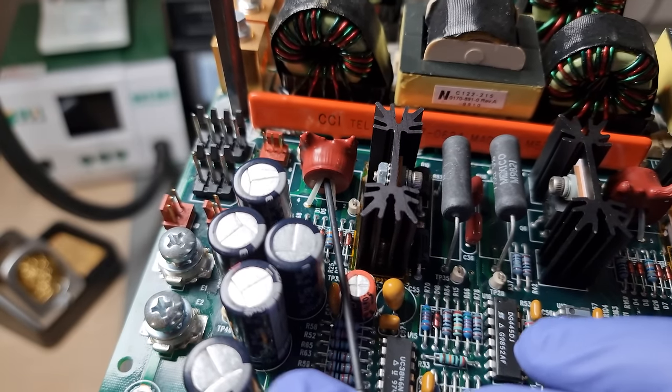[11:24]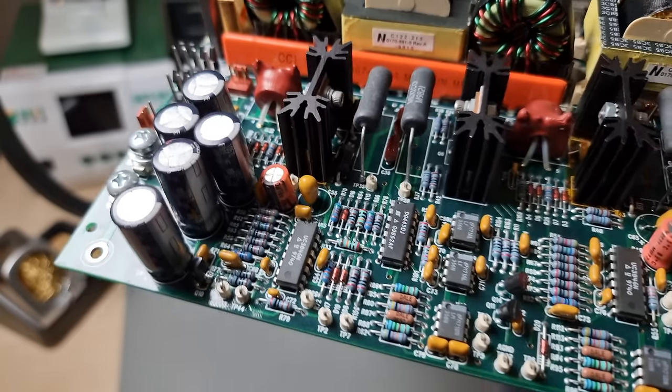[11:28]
A part of the feedback for the central PWM controller IC is coming from what looks like an improvised current transformer. It's basically just two opposing wires carrying the incoming 48 volt to the transformer, passing through a many-turn toroidal inductor. The resulting current signal is rectified, turned into a voltage, and then mingles with Coherent's own non-standard implementation. Something important for a constant current source is missing though, did you notice? That little current transformer is only sensing impulses on the converter's primary side. For pulse-shaping purposes, I suspect.
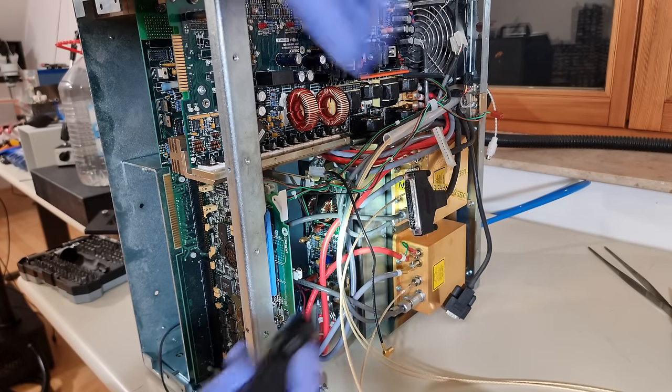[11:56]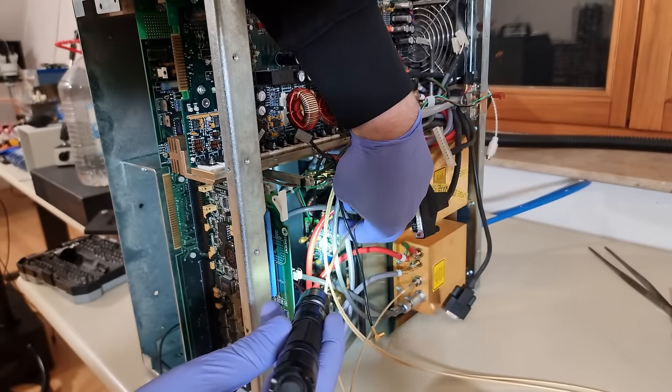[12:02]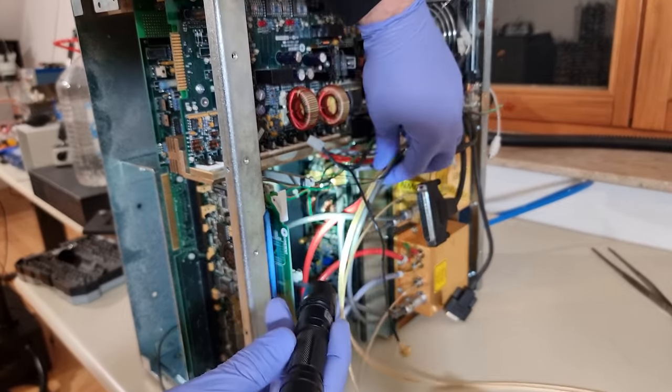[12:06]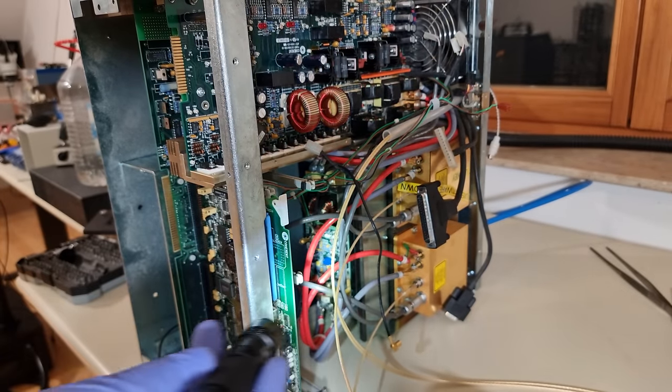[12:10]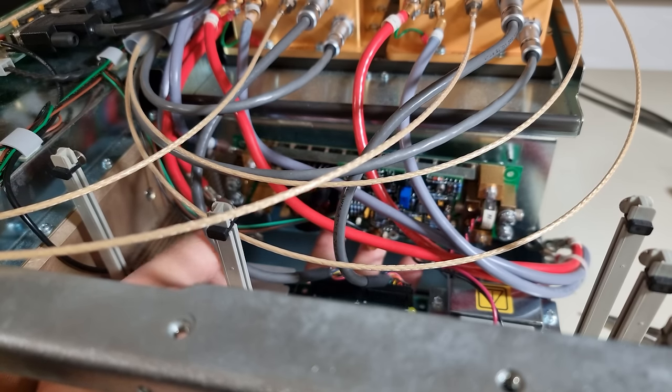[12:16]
Where are they hiding the precision shunt resistors that allow measurements and stabilization of the actual laser diode current? I am beginning to suspect that there are none. Since the laser diodes are under strict temperature regulation anyway, for their power and wavelength tempcos, their forward voltage per current should also be perfectly repeatable. So the FAPs are good current shunts on their own, just not very linear ones. So the processor might have to do some maths.
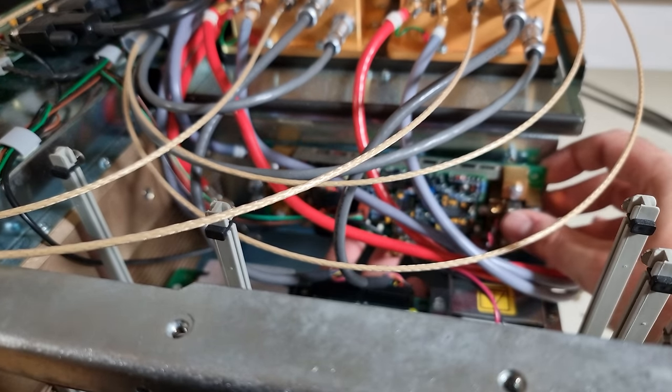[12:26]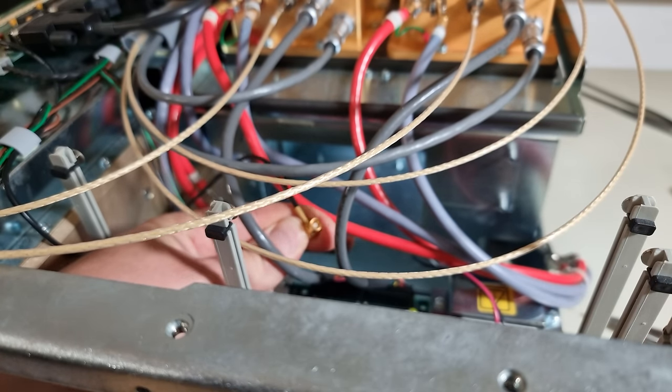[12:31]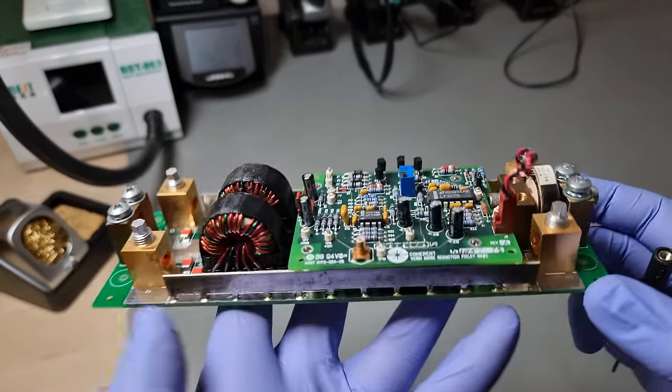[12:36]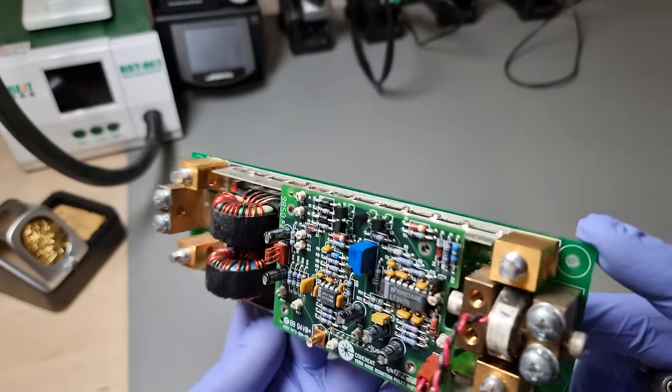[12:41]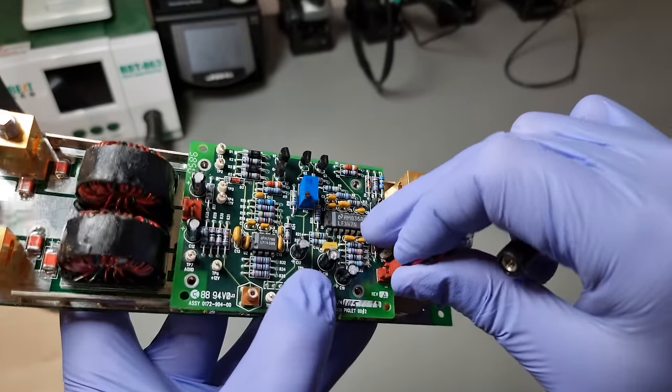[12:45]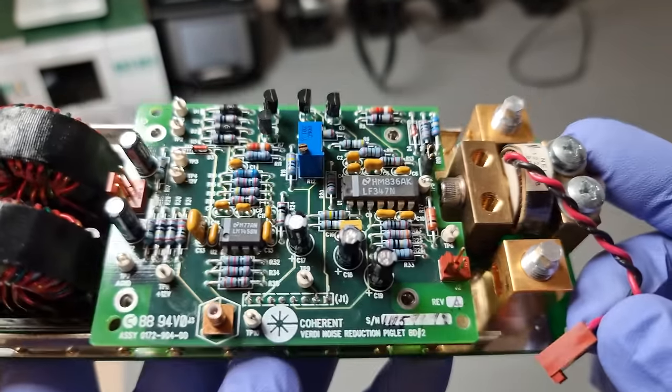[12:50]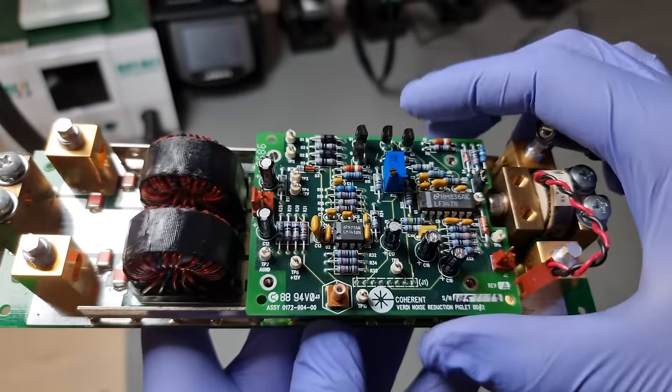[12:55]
Let's also check out this active noise reduction board that is working its magic directly on the two, possibly over 30 ampere currents that are passing through. Aw, cute. They are calling this the Verdi noise reduction piglet board. As far as I can tell, it's entirely optional for the operation of this machine. This active board only gets plus minus 12 volt supplies from elsewhere in the system. And I think a laser output power feedback signal via coax cable. Other than that, it only taps into the two 30 ampere lines at various points.
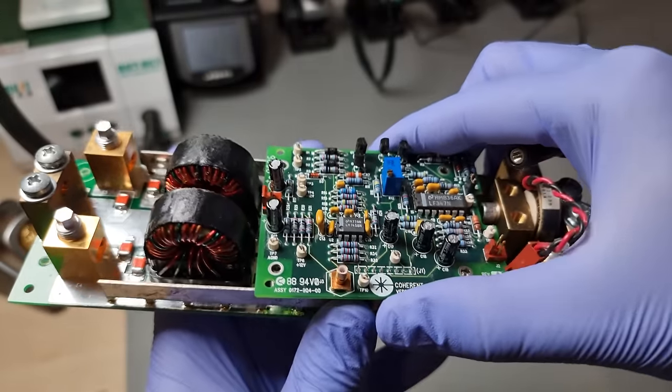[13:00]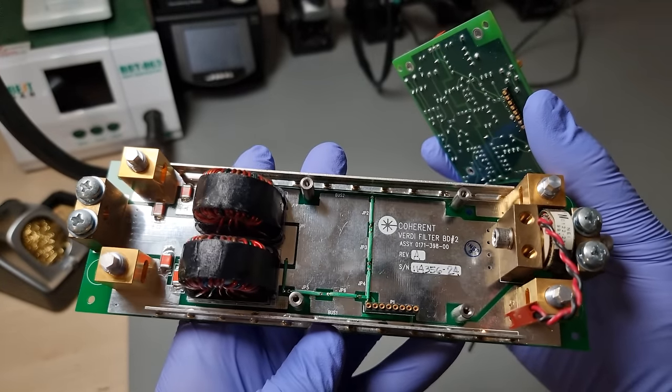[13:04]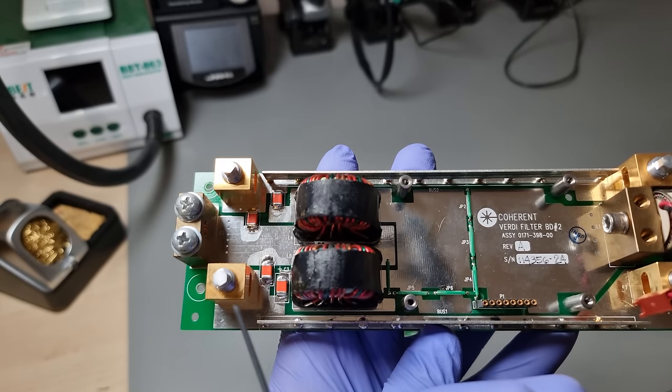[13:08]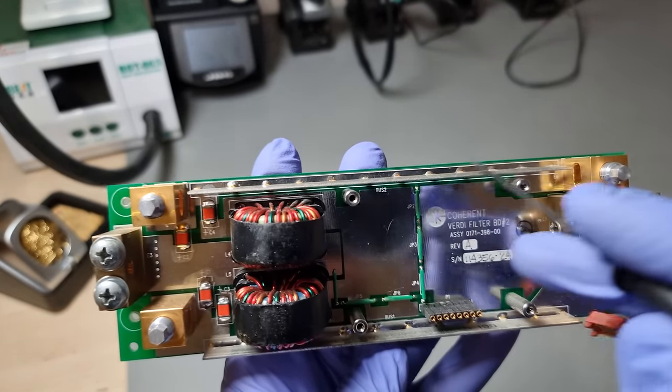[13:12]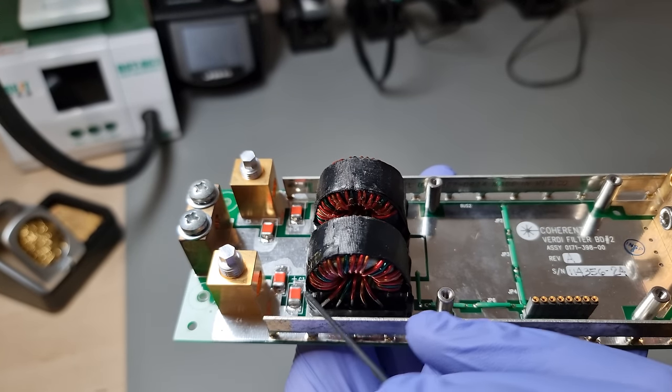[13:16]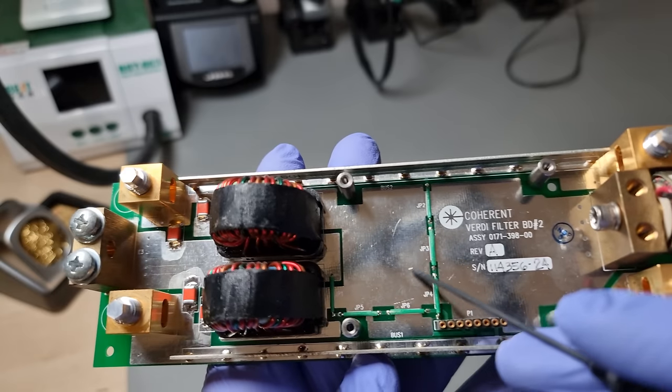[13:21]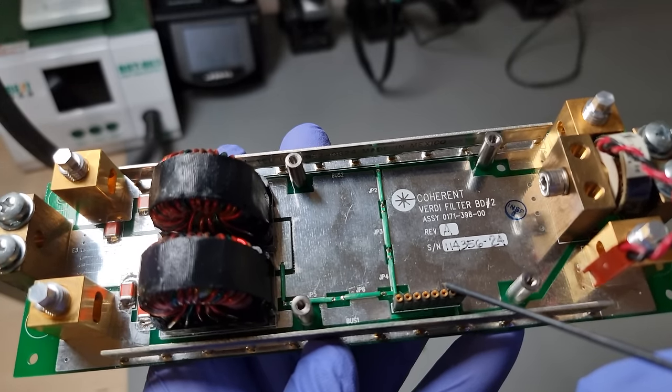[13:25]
For example, with another toroidal current transformer on the right. Or before and after the LC filtering on this passive board. Here, the two negatives go straight through from input terminals to output terminals unimpeded, assisted by two more of these SIP bus bars. The two positives are merged before being subjected to some more CLC filtering. Then they go through a combined current sensor and split off to the actual diode bars finally.
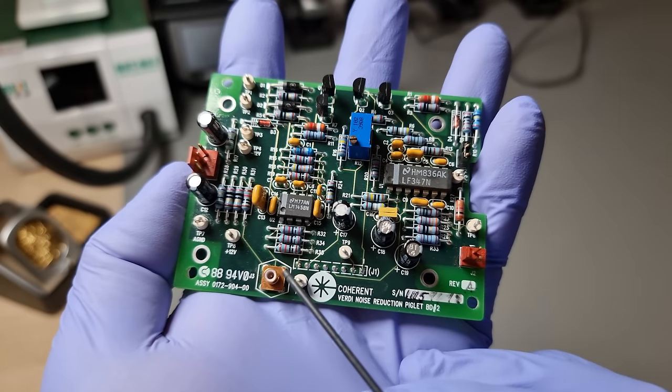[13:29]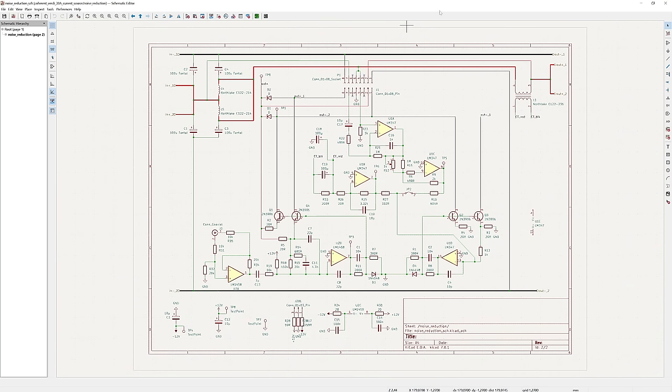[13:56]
The active board is fairly complex and thought through for how little influence it can swing. This dual op-amp U2 acts mostly on behalf of the coax input. I assume it takes control of these two transistors to smooth out ripples in the green output power. Meanwhile, this quad op-amp looks at a few electrical parameters, such as current sensor feedback or voltage drops over the LC filters. It has control over these transistors and tries to counteract the noise that it perceives. Yeah, couldn't help myself. Curiosity got the better of me.
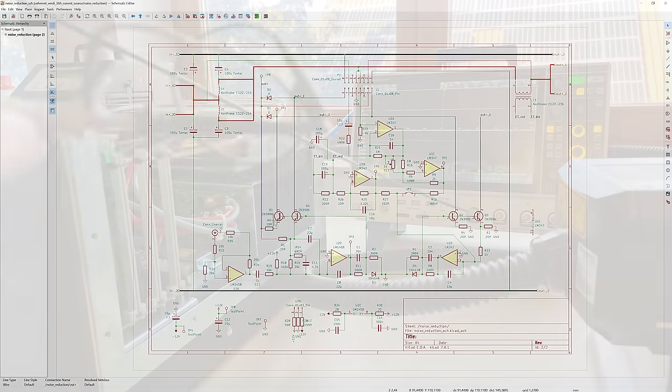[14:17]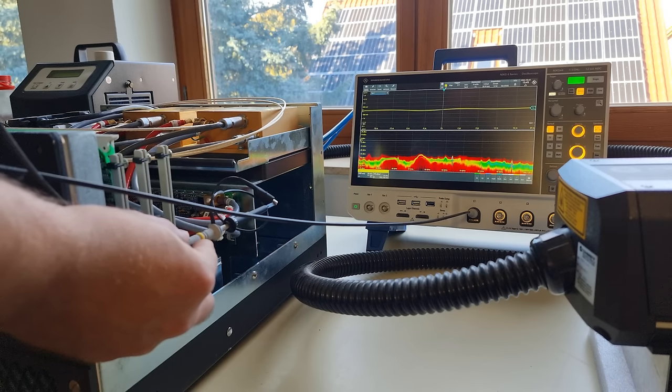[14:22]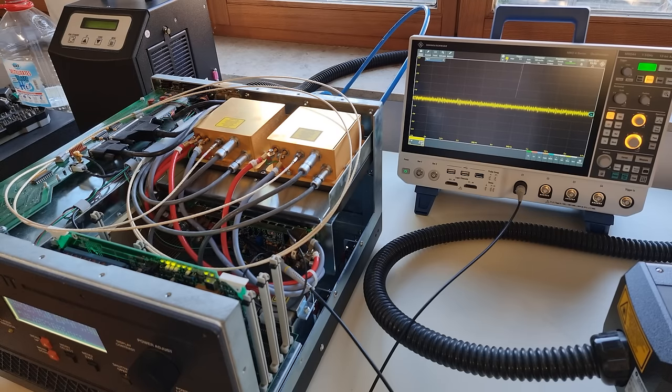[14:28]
So this board uses the voltage at the combined positives as ground. And through PNP transistors, it selectively allows small currents to flow from ground into the negative high current diode supplies. Astonishing. Under normal circumstances, there should only ever be less than 2 volt between the two. And they are additionally limiting these correction currents with 20 ohm resistors. So maybe this board can swing a few tens of milliampere on a good day. That should make a meaningful difference on top of the 30 ampere main drive really shows what a highly sensitive system this is. Here's what happens on TP3 if I mount an attack on one of the fiber optical cables. AC coupled, by the way.
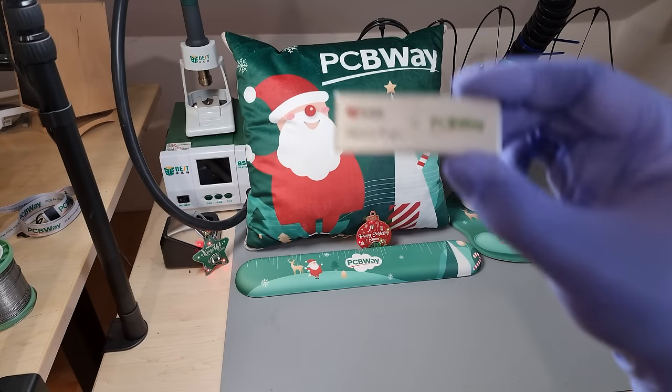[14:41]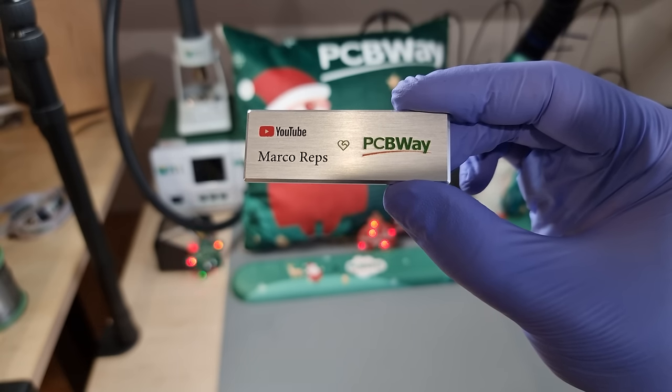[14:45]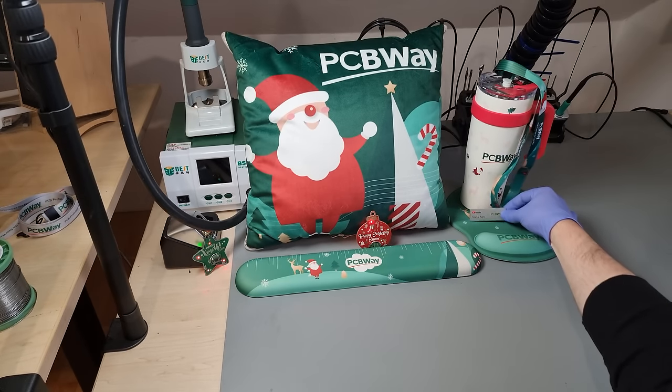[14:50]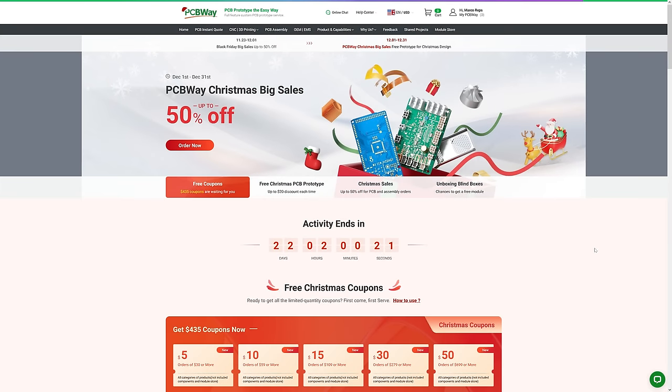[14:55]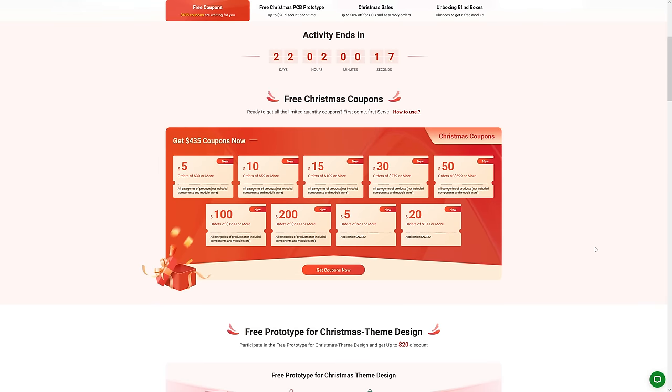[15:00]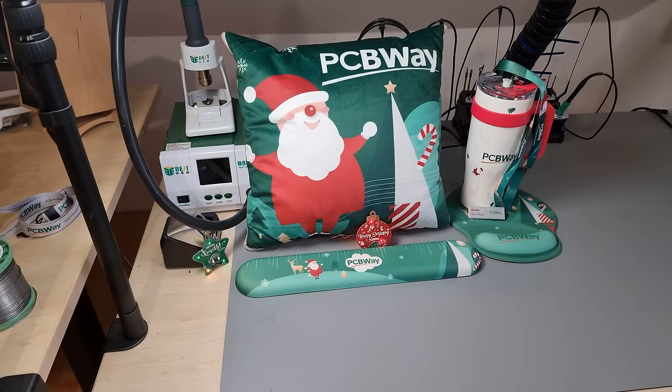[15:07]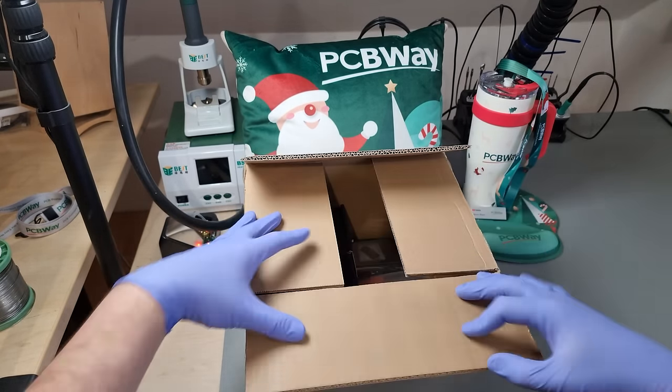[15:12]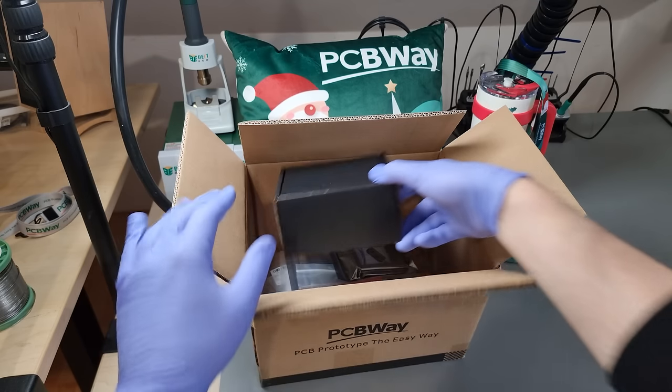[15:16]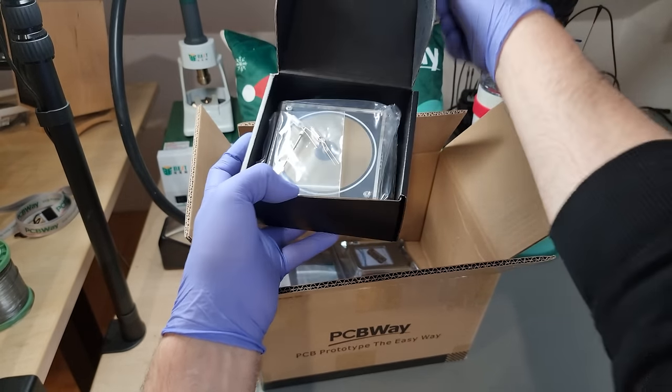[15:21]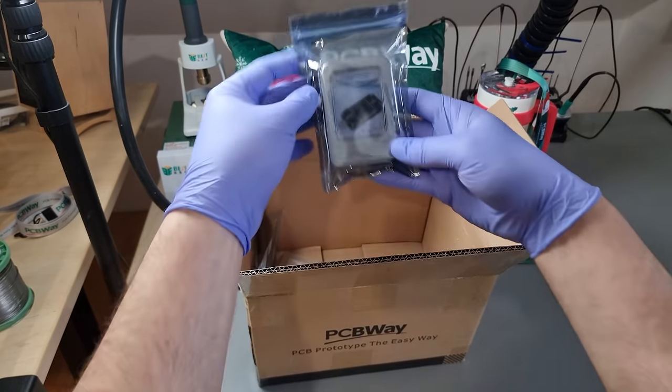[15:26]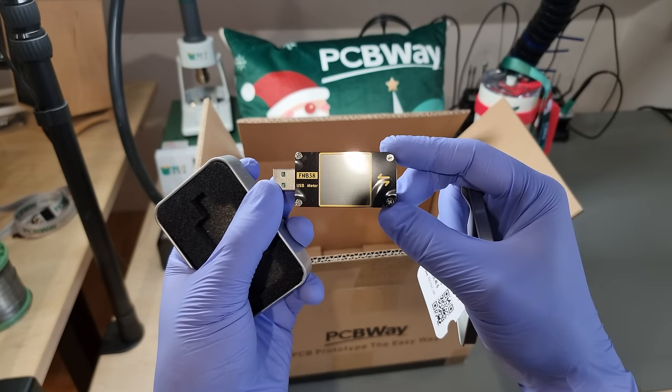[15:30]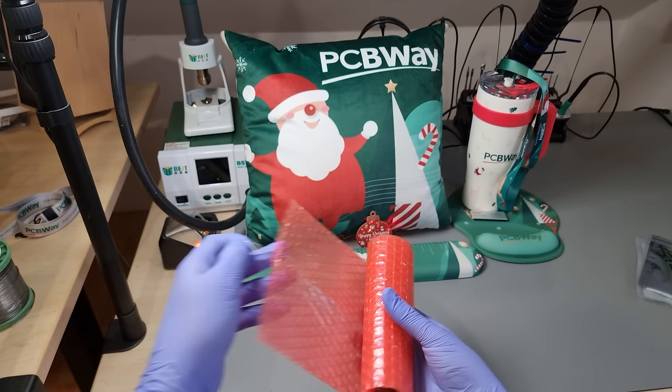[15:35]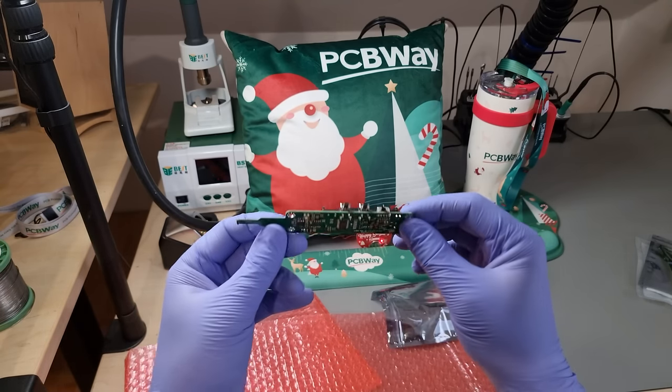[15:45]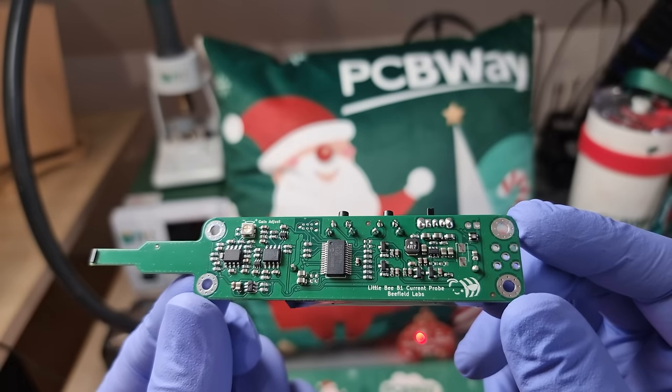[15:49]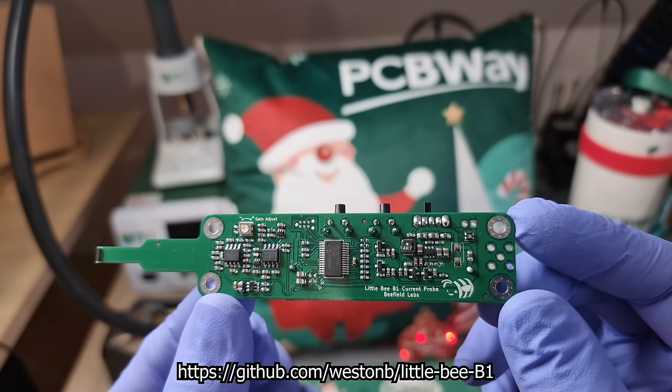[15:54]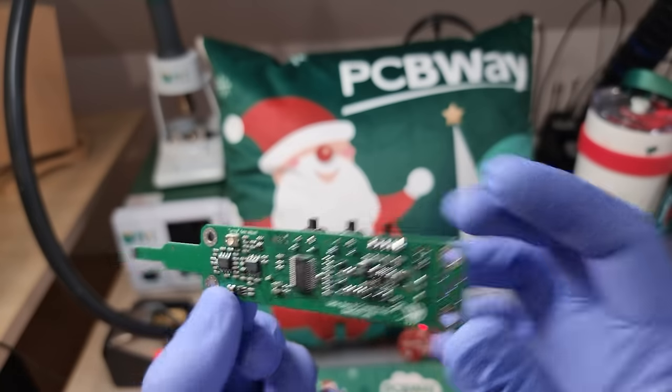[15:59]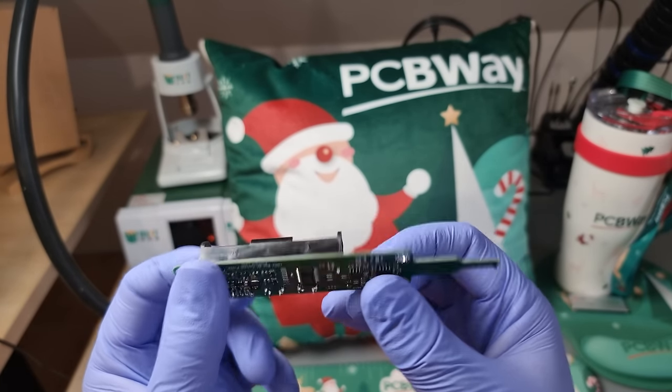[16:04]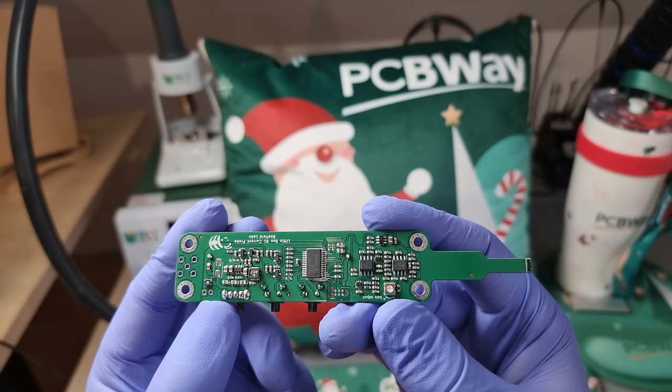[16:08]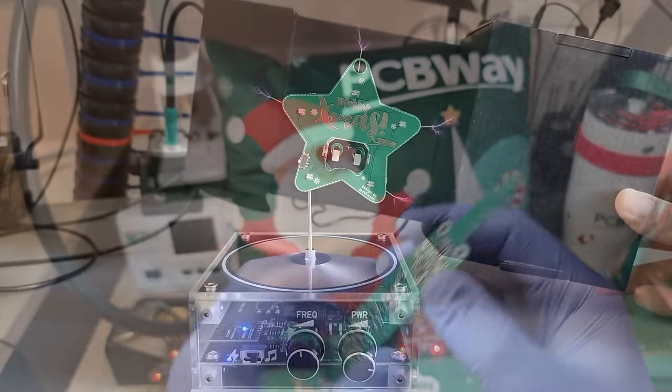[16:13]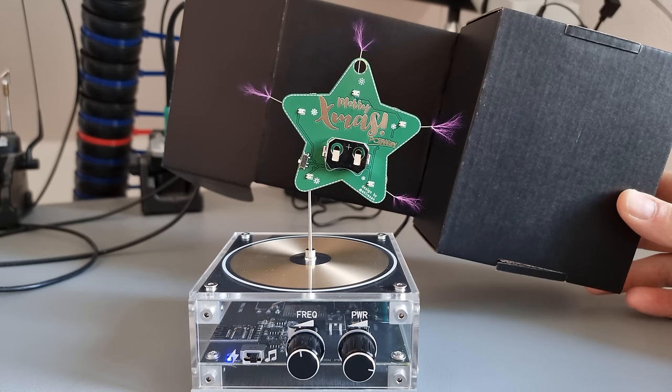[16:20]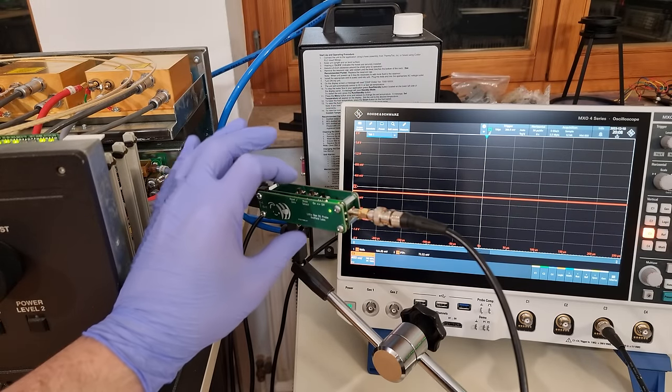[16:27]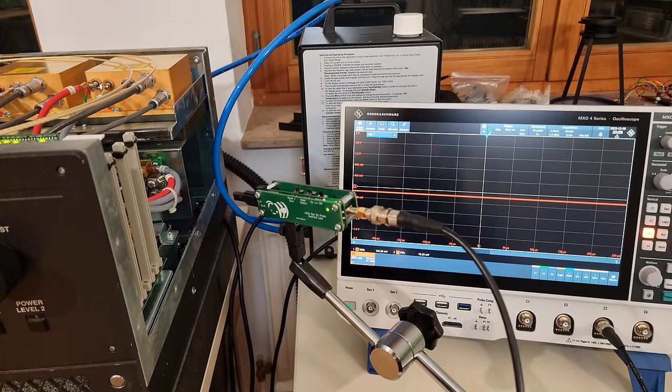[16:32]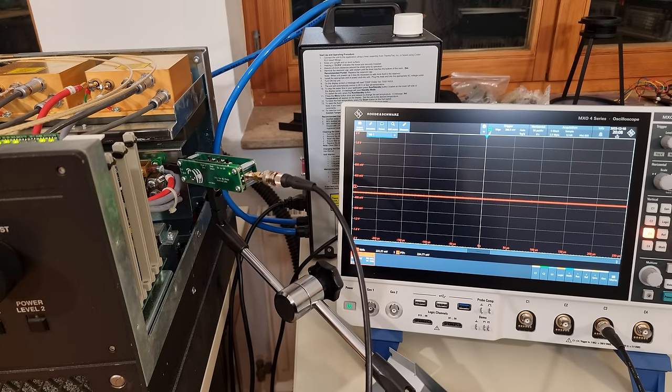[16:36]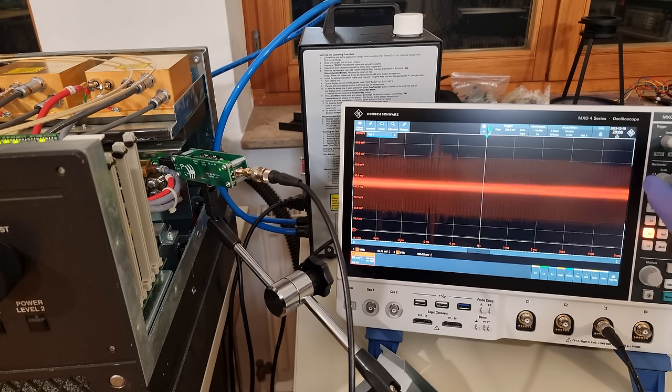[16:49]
An oscilloscope current probe can cost many thousand dollars from the larger brands. So I'm quite excited to finally add one to my toolbox. The B2 is DC capable and has by far the lowest cost per megahertz. Without a ferrite core flux concentrator attachment, it can also be used as a general purpose magnetic field probe for diagnostics and EMI pre-compliance testing.
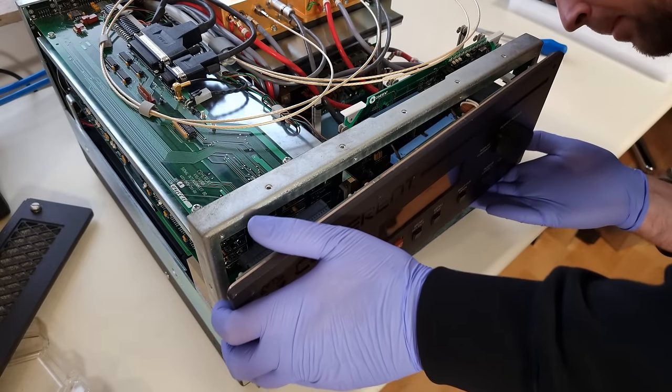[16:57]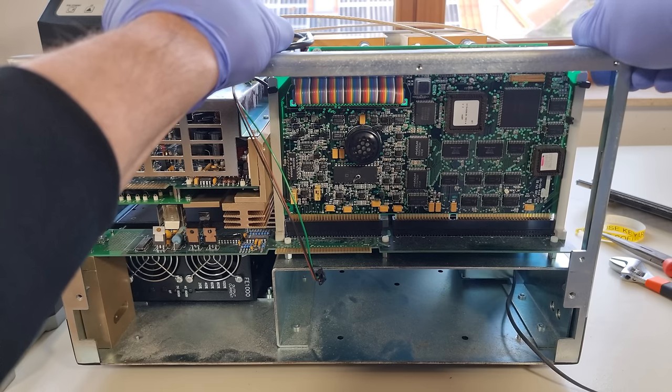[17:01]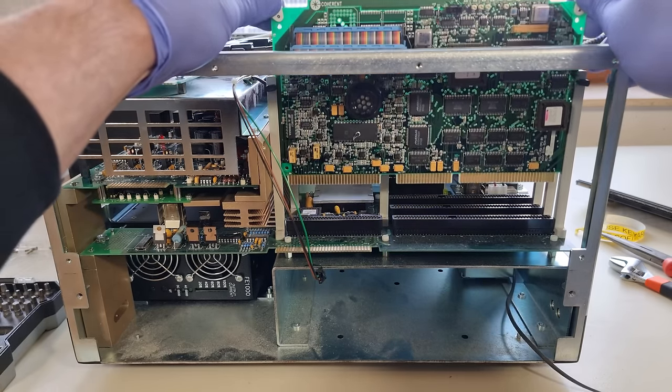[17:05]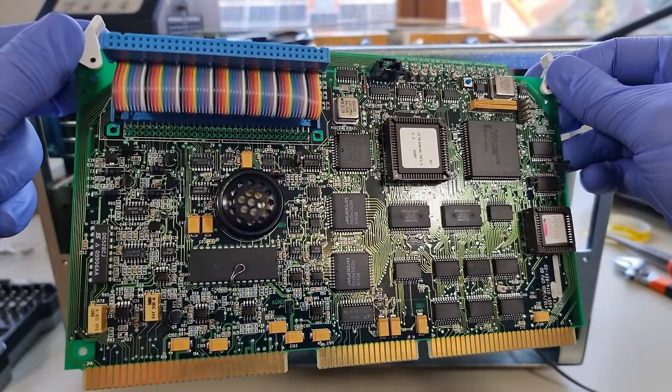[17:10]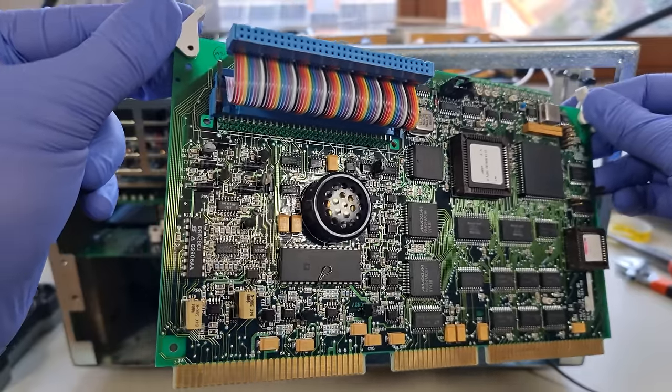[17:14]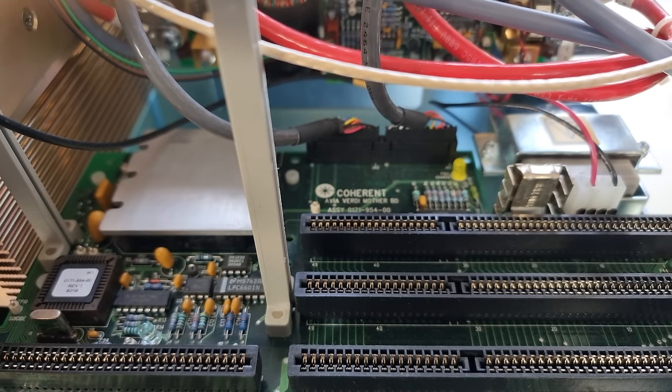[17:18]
But enough doodling around, let's try and revive this thing at long last. Just behind the front panel lives a CPU card. And I get a feeling that somebody has already tried their luck on it. It was not plugged in all the way. There is an artisan test point on the ADC. And a jumper link is already placed over JP9, unlocking the dangerous, not so secret service menu.
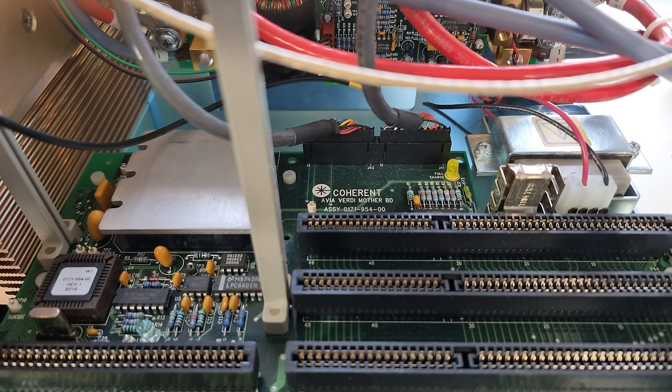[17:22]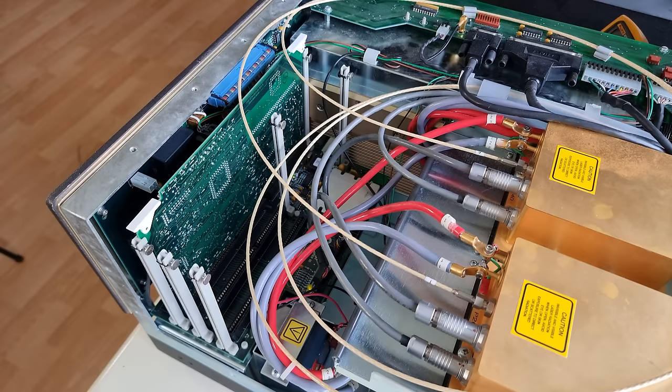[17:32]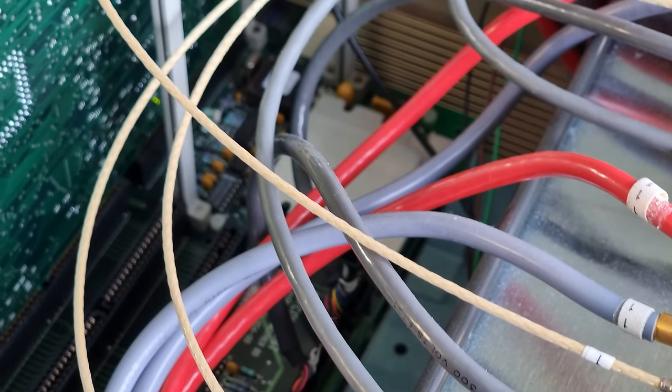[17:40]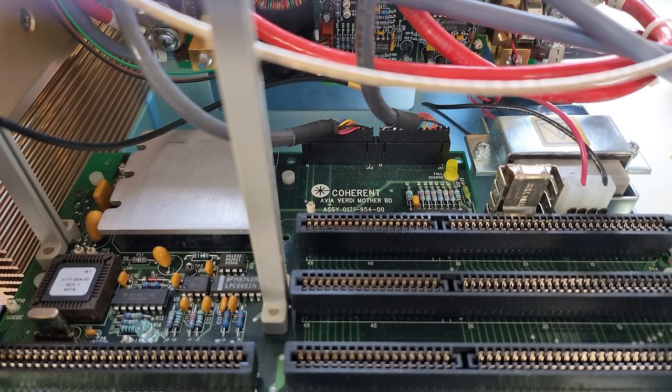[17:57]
Besides interboard connections, the motherboard has only one function, I think. It keeps a little sealed lead acid battery charged, presumably through this fuse, which was open circuit. When the laser is powered down, a microcontroller on here takes control of a crystal heater in the head and very slowly and gently ramps down the temperature of the most important optical component in the system, the LBO, instead of letting it freefall and crash to ambient temperature, which could damage it or at least change its properties such that a lengthy retuning might be necessary.
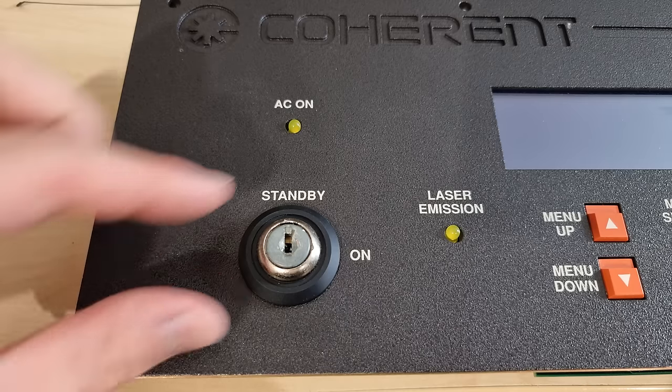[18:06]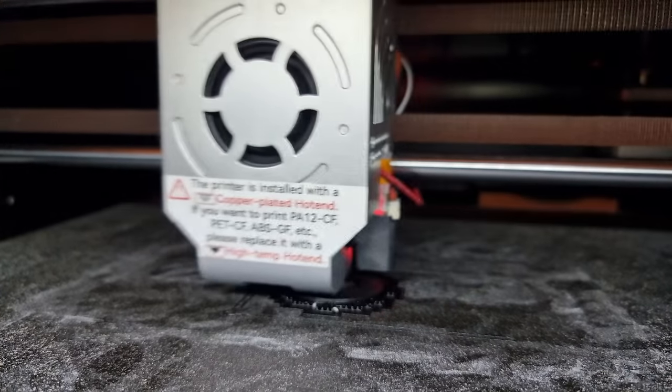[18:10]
I wonder if an LTZ-1000 could also benefit from such a system. I replaced the blown fuse, a shorted tantalum cap, and the battery, which was too far gone for revival. I also 3D printed a new bezel for and replaced this keyless key switch with something a little bit more usable.
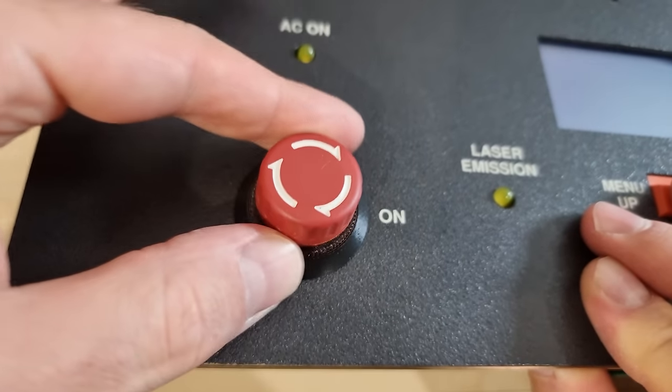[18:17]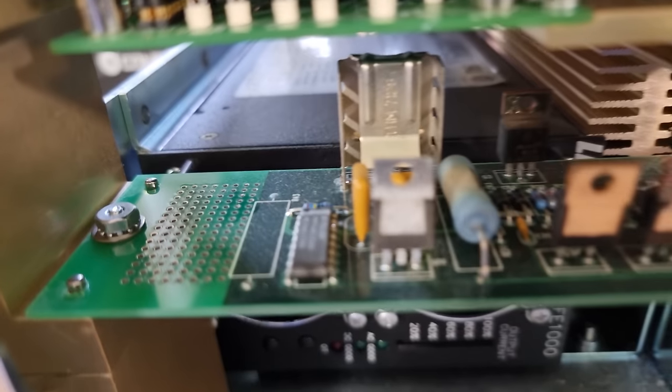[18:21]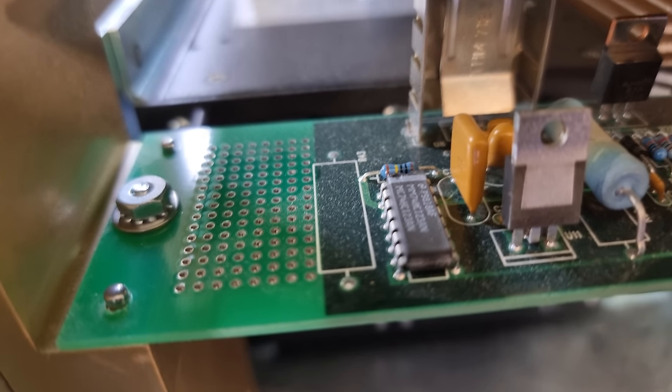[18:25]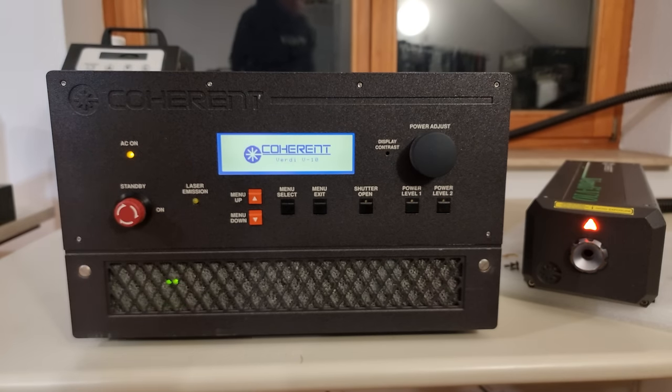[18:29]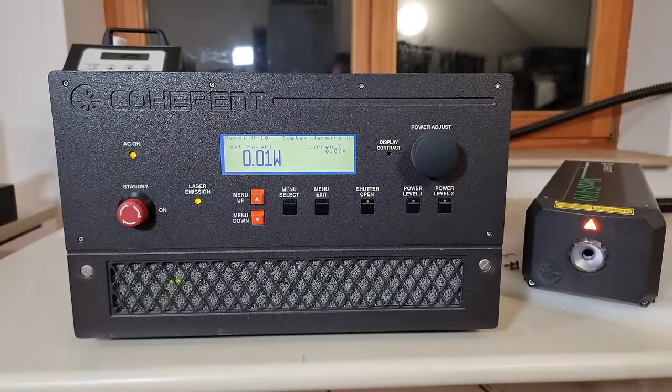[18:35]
I briefly appreciated the fact that the Coherent engineers had prepared themselves a cozy little prototyping area in here. Love it. And we are in. Can't say for certain what did it. I think the shorted tantalum capacitor was only interfering with the battery backup subsystem. But I haven't seen another blank display start since, and that's good.
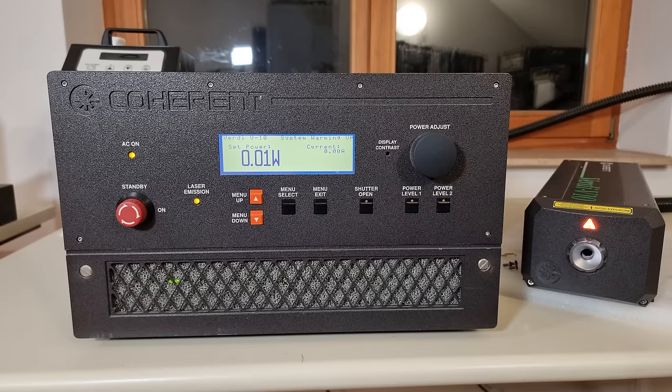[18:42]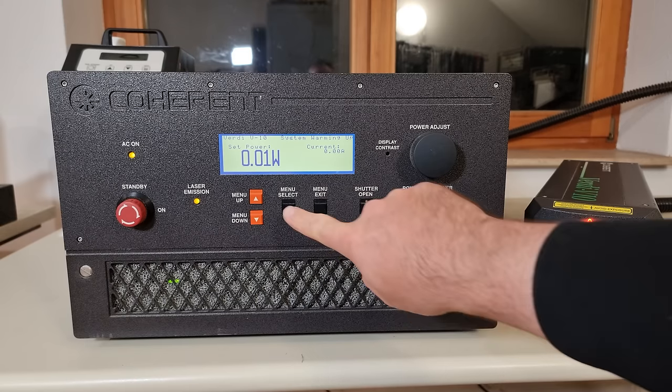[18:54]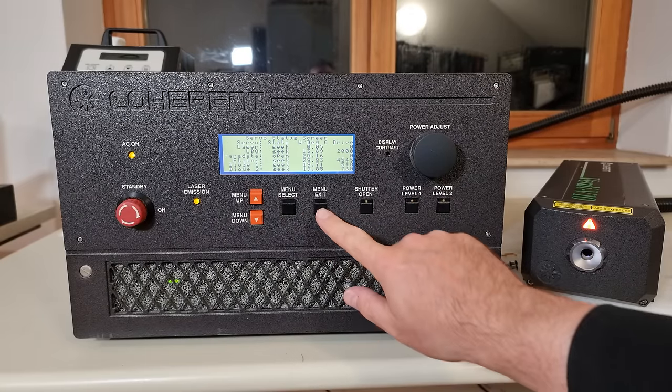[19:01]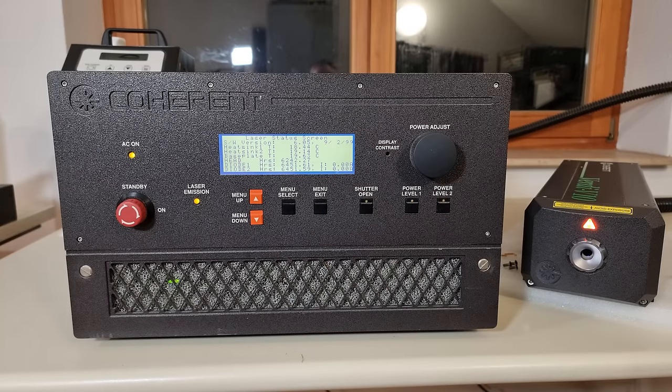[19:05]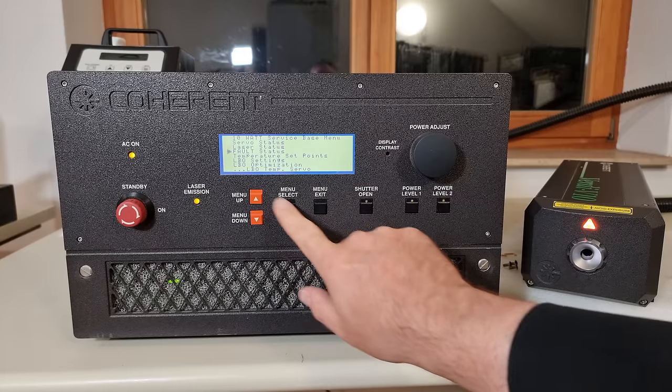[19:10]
Of course, in keeping with the same thermal shock precaution, our special crystal can only be brought up to its operating temperature of around 150 C very slowly. So we have a moment to ponder the advanced service menu. Servo status is kind of an overview of all the control loops, like temperatures or laser power. Laser status is an overview of the whole device. It can tell you, for example, if heat is extracted correctly from the pumping diodes or the head baseplate. We have no reported faults at the moment, which I doubt, but always good to be optimistic.
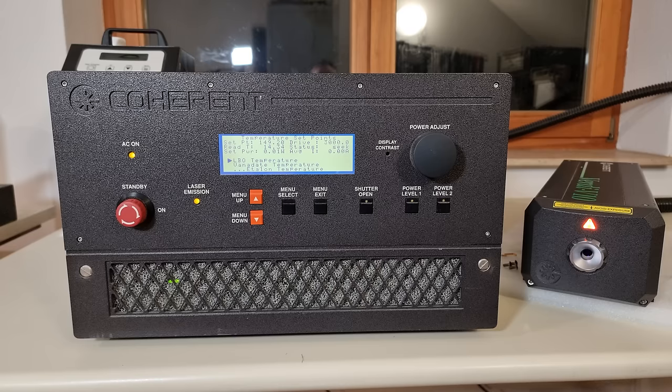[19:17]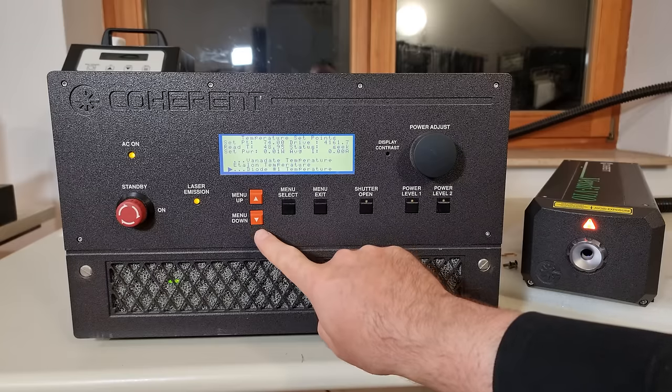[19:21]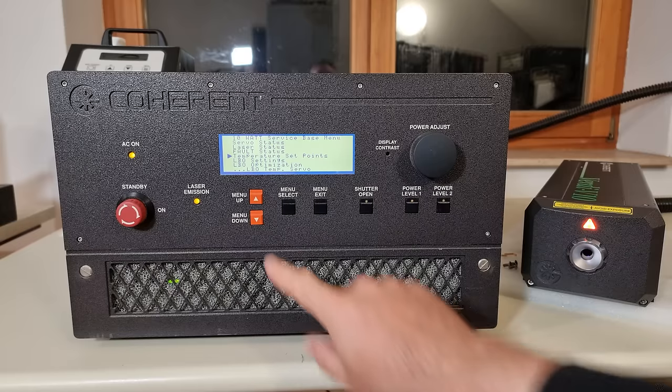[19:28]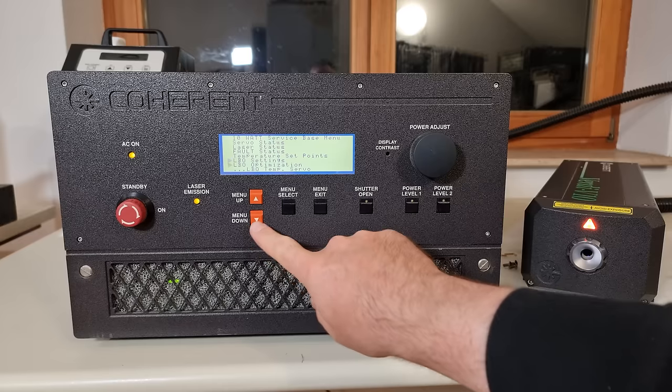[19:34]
Temperature set points is a tool that displays the green laser output power, if any, together with, you guessed it, temperature set points. It lets you make temporary changes to try and eke out 0.5% of efficiency somewhere. I think LBO settings only lets you initiate the lengthy controlled cooling while still under mains power without relying on the battery.
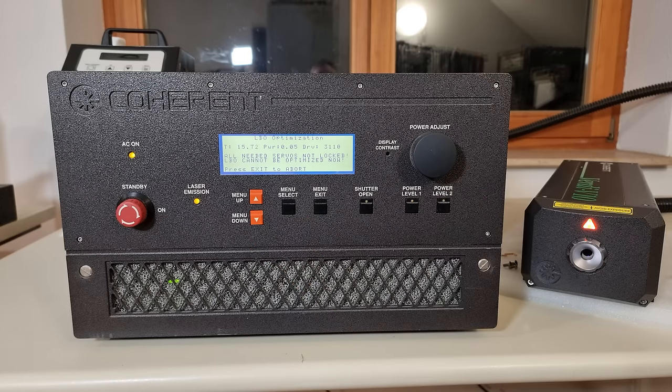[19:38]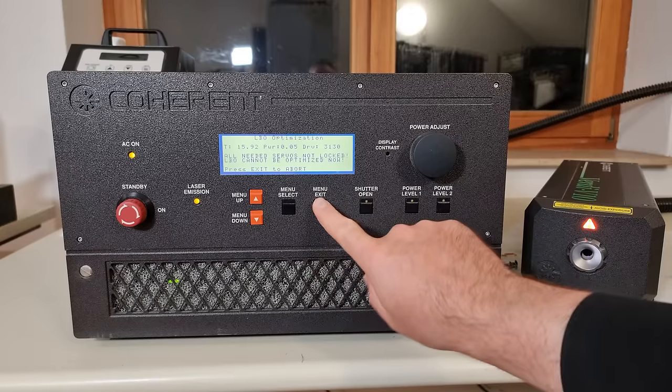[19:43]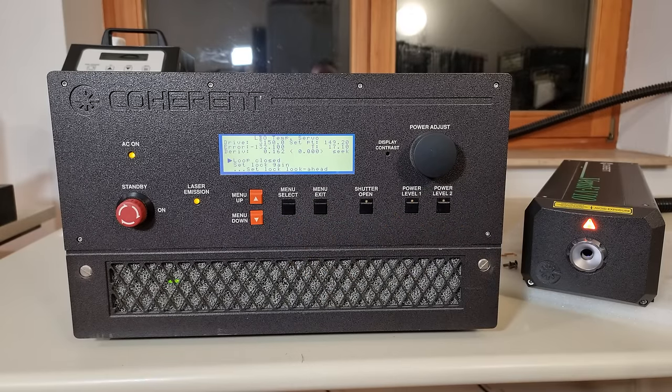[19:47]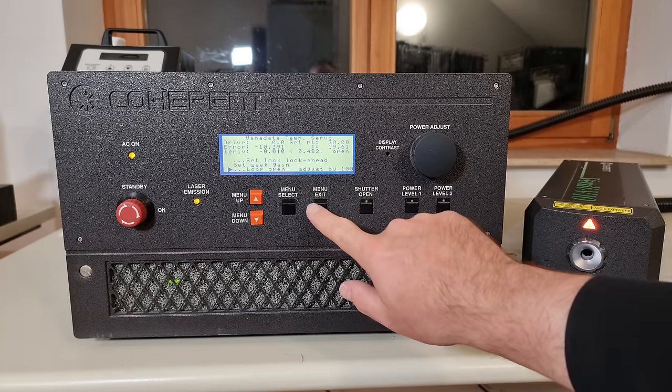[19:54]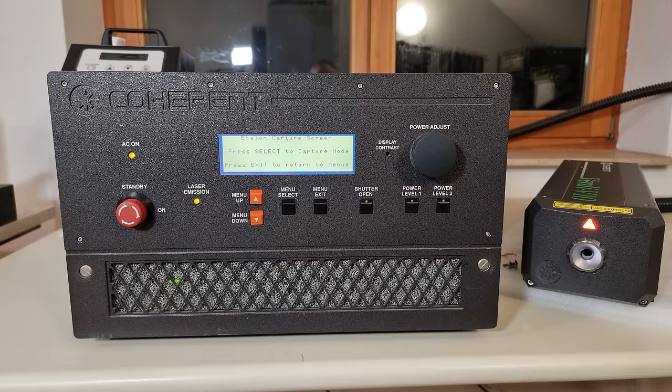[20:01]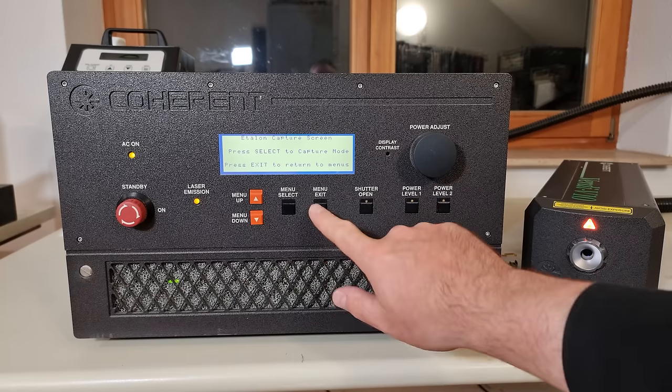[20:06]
LBO optimization is a 4-hour auto-tuning program that tries to maximize the infrared to green conversion efficiency by testing a range of LBO temperatures in the neighborhood of 150 C. The next few temperature servo settings all work the same. They are for fine-tuning the control loops and to set in which range they can be considered locked. Etalon capture is a brief blinking out of the pumping diodes, which can re-center the resonator frequency. We'll talk more nonsense about LBOs, etalons, and vanadates in a minute, don't you worry.
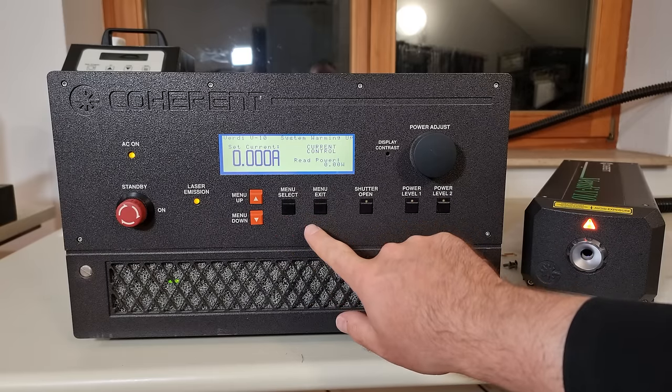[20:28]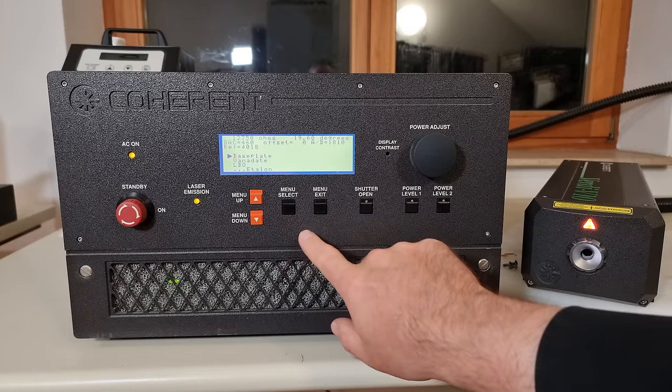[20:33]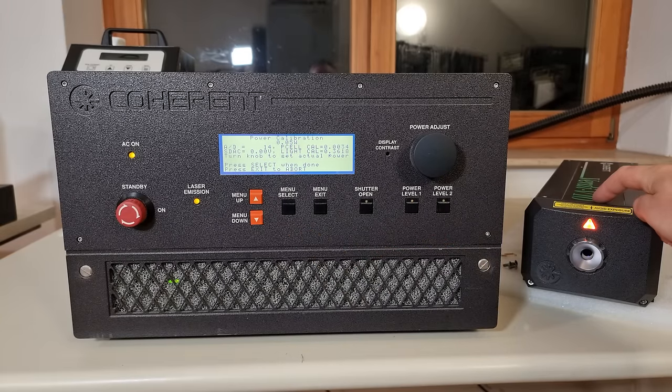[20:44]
With diode current delta, you can force a small asymmetry onto the diode's power supplies to try and compensate for other imbalances in the system. Here I'm going to switch to current control mode, which lets me command, with that power adjust knob on the right, how many ampere are going to be squeezed through the diodes, as opposed to the default arrangement of me commanding how many watts of output power I want, and the Verdi trying to deliver that based on a built-in power sensor, which should be right there in the head, just behind the brightly illuminated warning sign.
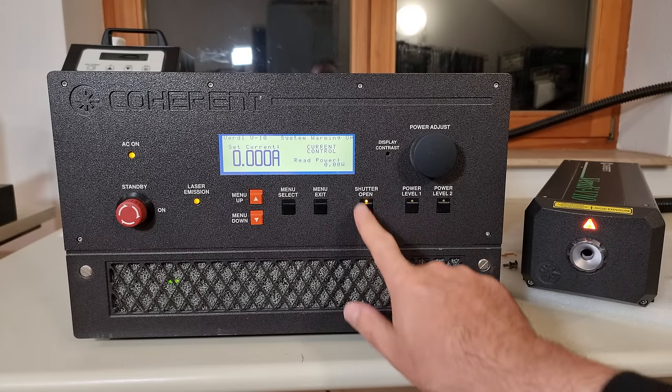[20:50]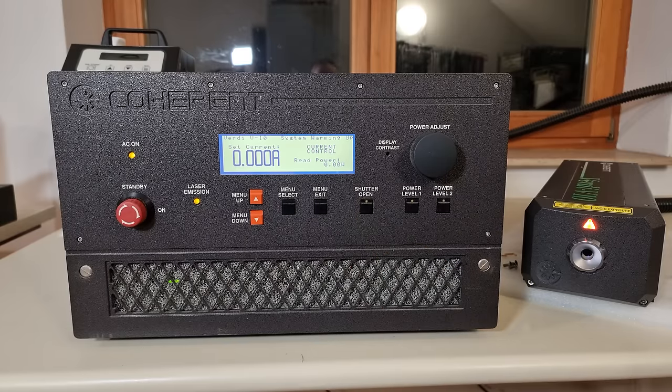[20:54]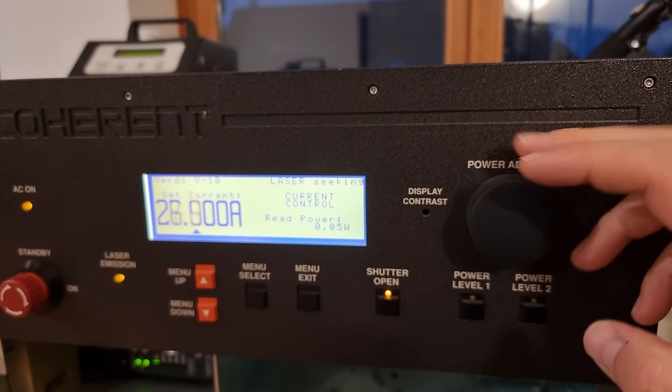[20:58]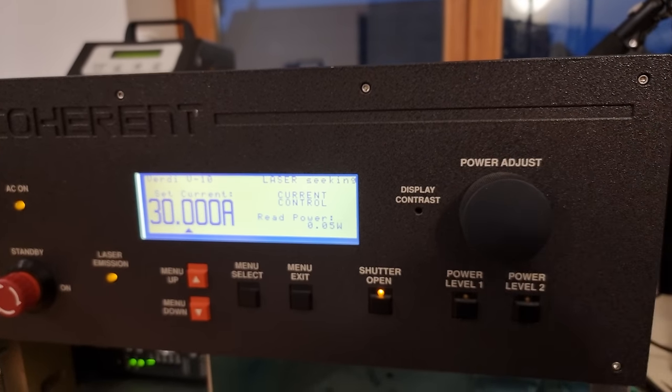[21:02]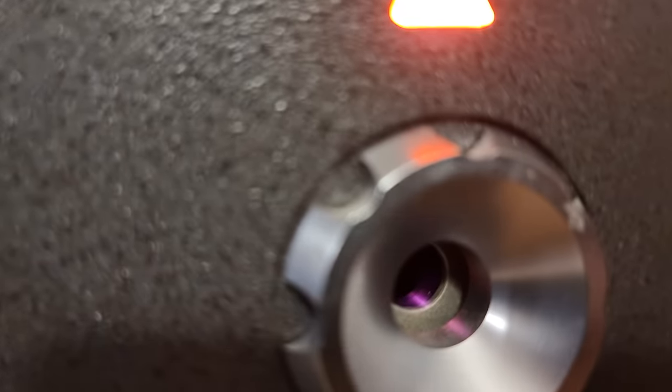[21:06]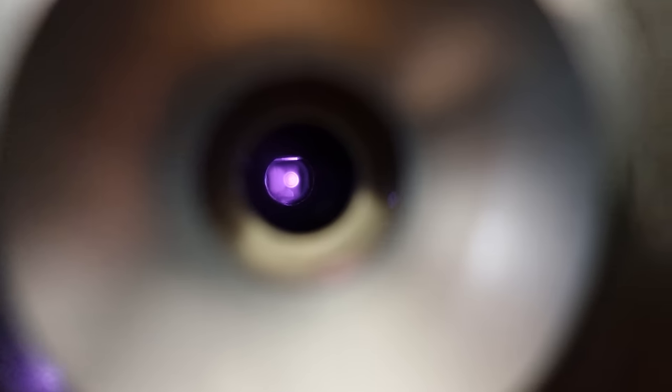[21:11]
Okay, I think it's time to get out of the way, lest we are pew-pewed out of existence in a moment. Yep, that's my small contribution to optimism today. But no, we are not quite there yet, it seems. Even at 30 ampere through each diode, the built-in power sensor sees nothing. We are not even getting total camera sensor annihilation when looking straight into the aperture. Just a vague pink glow, which is its interpretation of infrared.
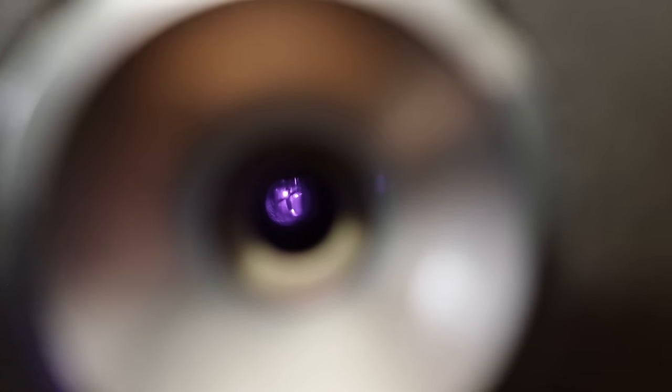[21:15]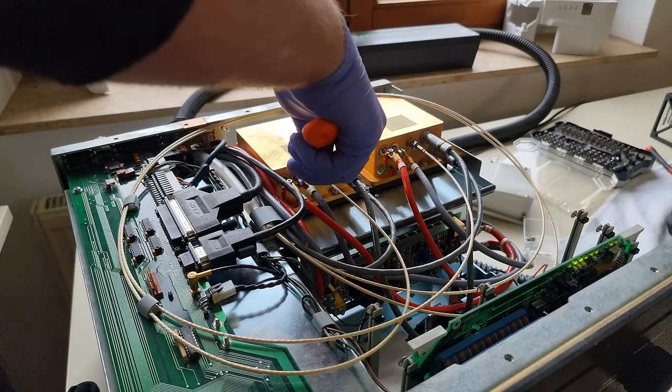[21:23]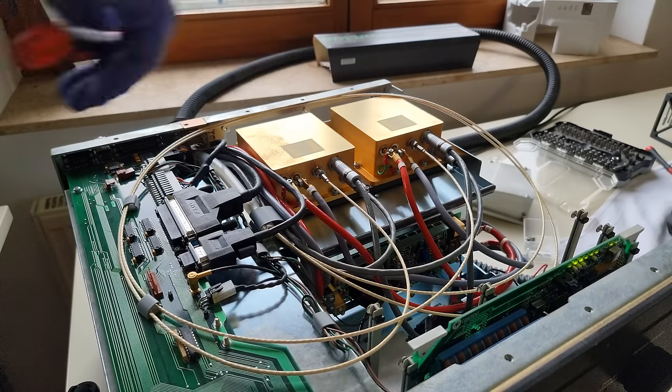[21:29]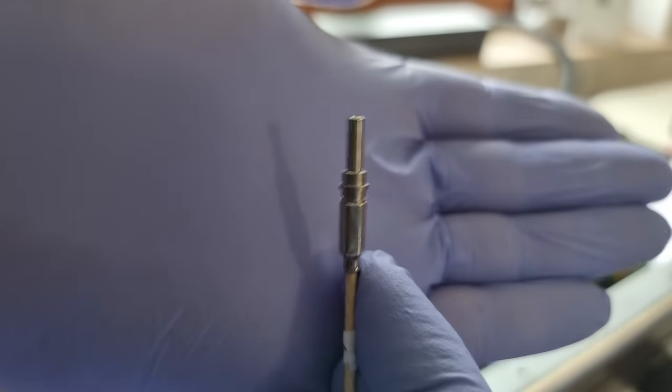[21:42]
So this is a tricky situation. A lot of things could cause this lack of pew-pew. First and foremost, I guess that LBO crystal, whose conversion efficiency according to the manual can vary by 50% per degree Celsius. Whew, that thing is much more sensitive than an LTZ-1000. Hope they have a good 13K 1K voltage divider in here. But when I swept through the allowed crystal temperature range slowly, I never even got a small hint of green.
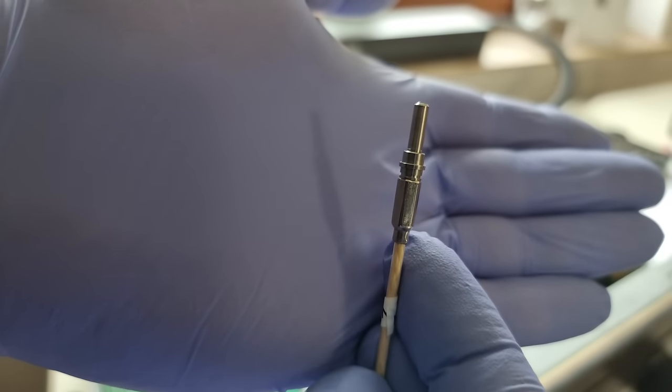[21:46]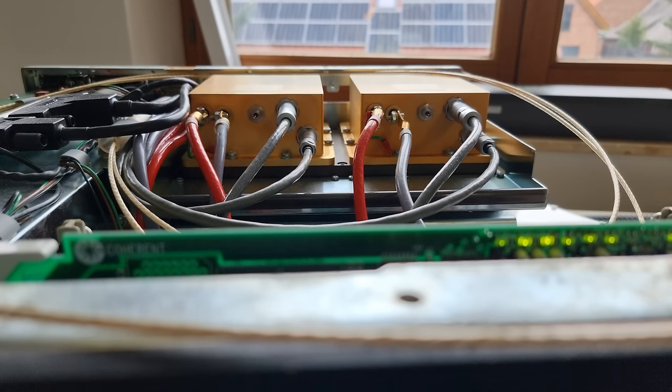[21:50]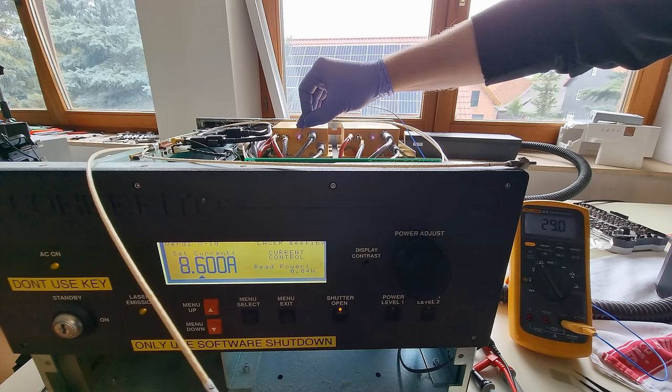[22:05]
It could also be a damaged fiber optical cable. The umbilical cord's armor was slightly crushed at one point, but the bundles are still well protected underneath, and it's all very resistant to bending. Someone really has to have malicious intentions to damage that. Before taking the risk of disassembling any other sensitive components, I wanted this naive test to show me if I was getting roughly similar output powers out of the FAPS at roughly equal current.
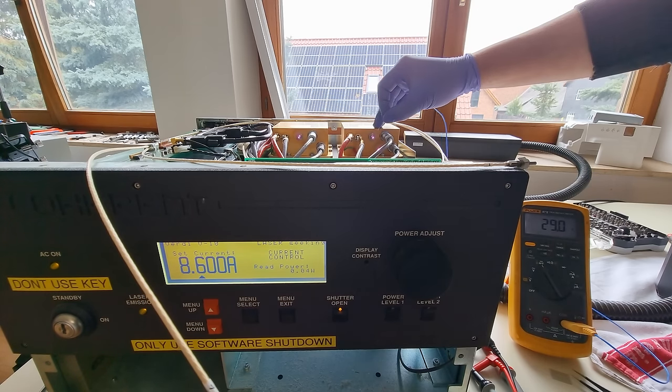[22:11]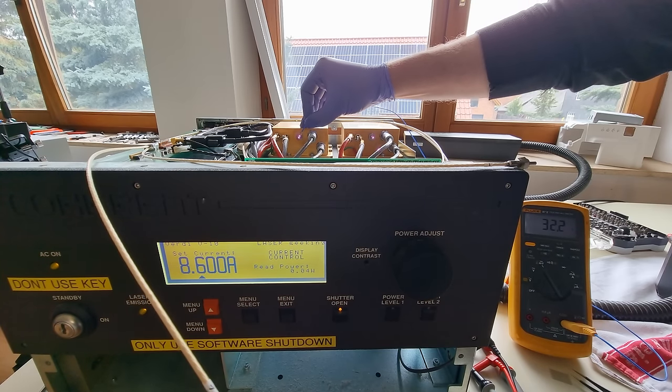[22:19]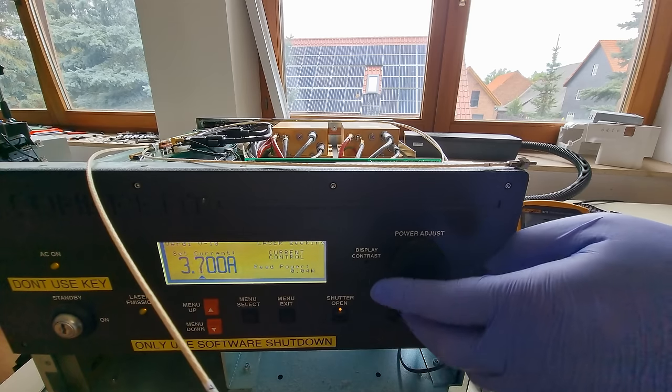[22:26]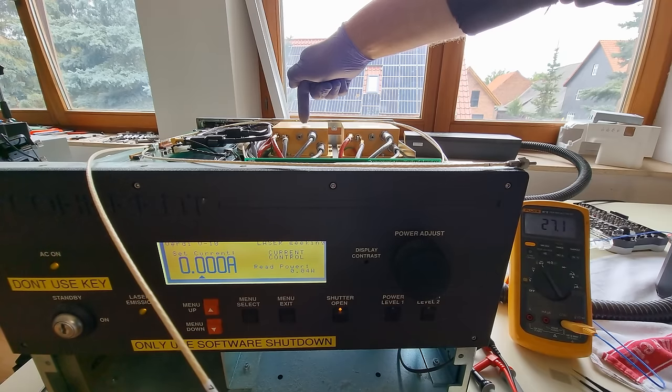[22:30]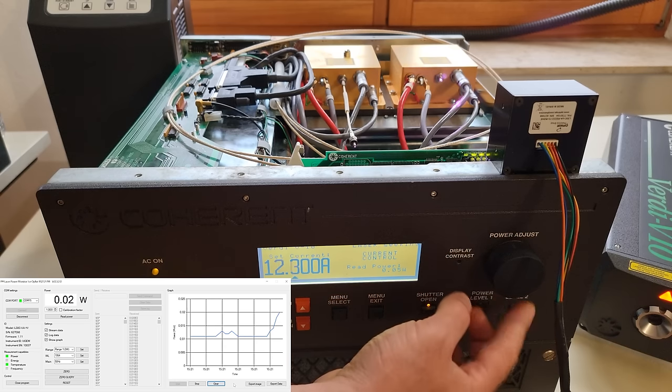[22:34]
In retrospect, this is not a good test. At 8.6 ampere, the lasing threshold of these diodes is just around the corner. I should have done this at over 11 ampere and with a laser power meter. But how should I say it? I was very lucky. I misinterpreted the technically plausible difference I saw at this low current as a clear sign of fiber array package 2 being unwell. This mistake made me take a closer look though, and it ended up leading me in the right direction.
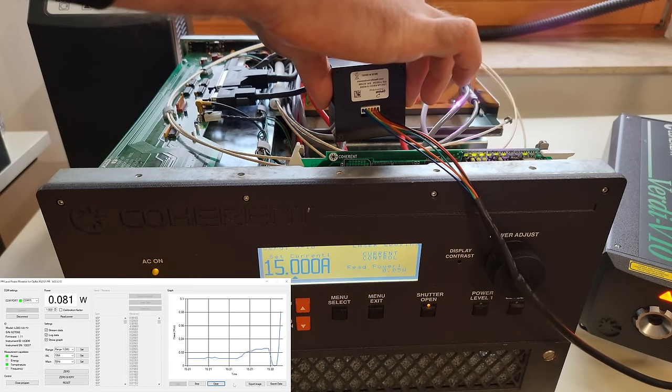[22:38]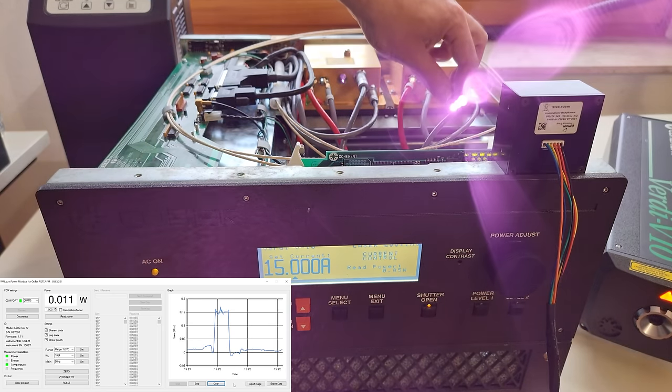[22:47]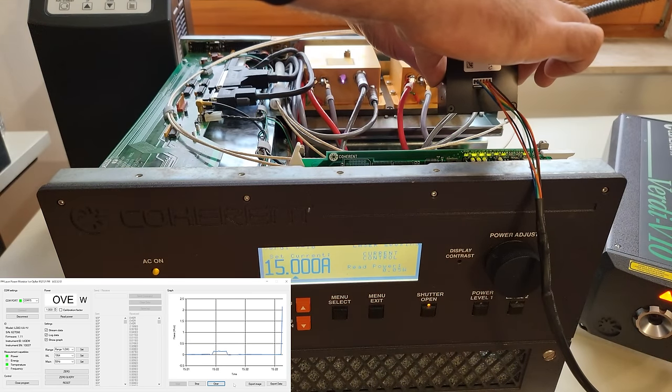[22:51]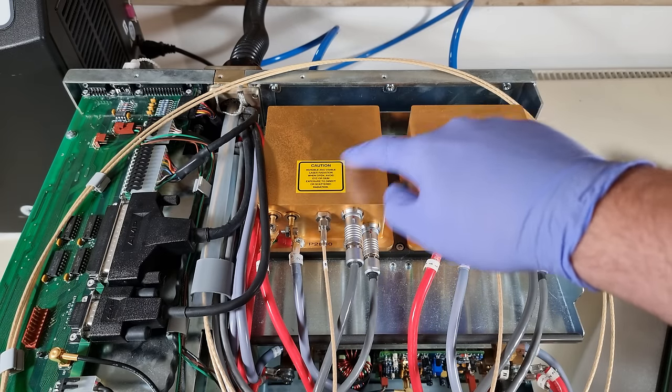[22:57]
We hardly need the power meter to confirm the gigantic difference in infrared output power between diode 1 and 2. At 15 ampere, diode 2 gives us 150 milliwatt. Meanwhile, diode 1 is off the charts, so over 3 watt. I could literally feel it on my skin. So that is unfortunately a faulty or worn out fiber array package.
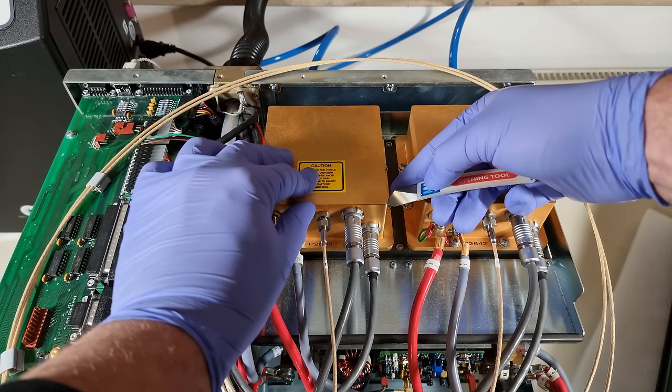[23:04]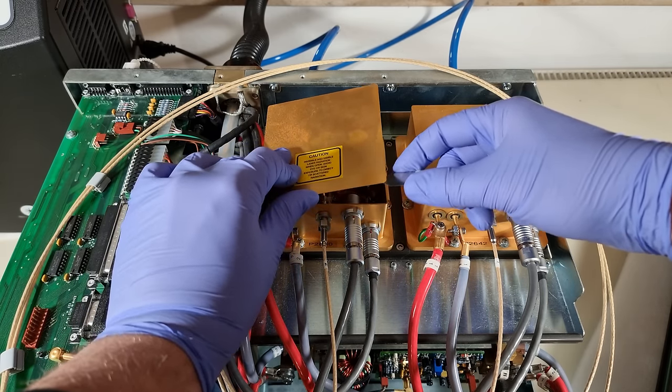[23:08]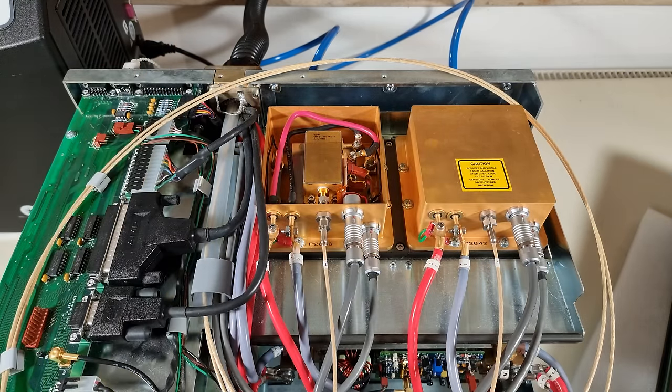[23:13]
What? Why does it sound so hollow? Seems like the lid is just glued on, rather than this whole thing being milled out of a solid gold ingot. Whoa, what a scam. I thought these would be full to the top with diode bars, copper mirrors and beam combiner optics. But I'm okay with this. These smaller packages are very popular and readily available on eBay all the time.
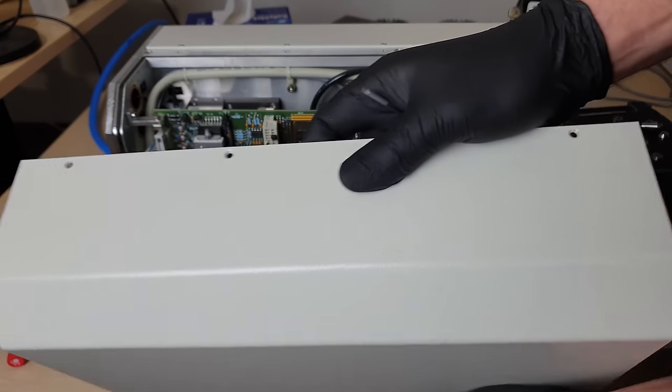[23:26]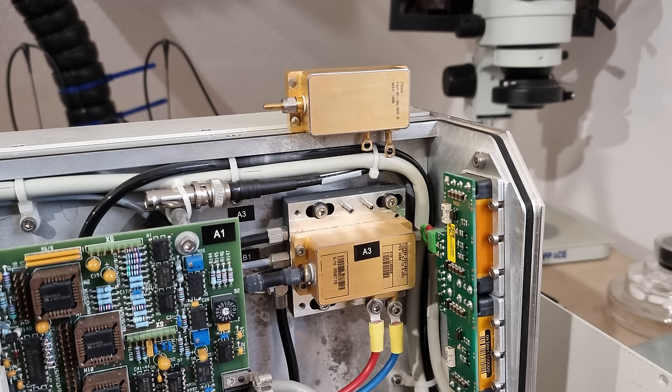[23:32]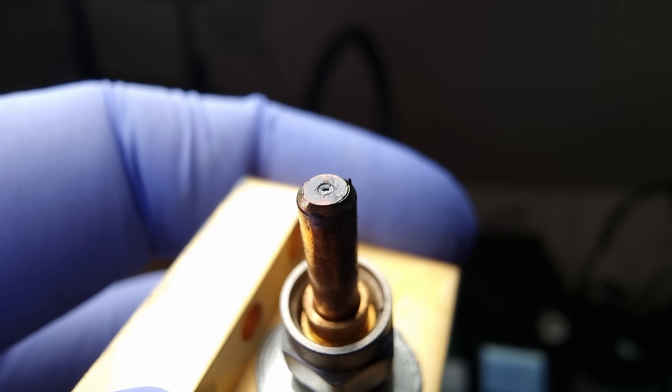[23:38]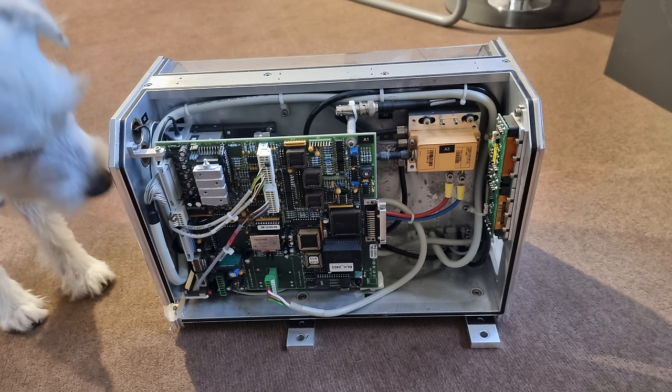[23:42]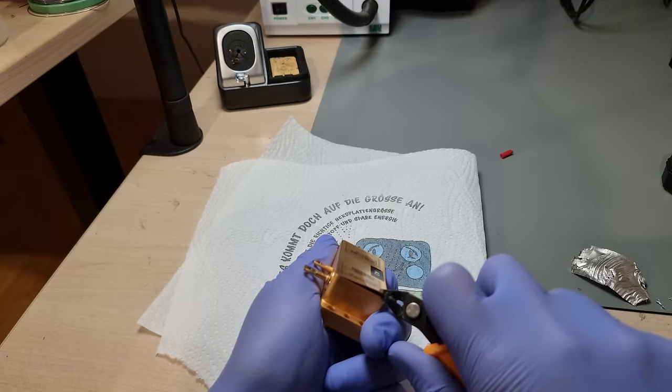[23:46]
Turns out I even have another old broken DPSS laser based on a small Coherent FAP right here in my waiting room. Unfortunately, its diode is even less healthy than the one we just diagnosed, so I won't get around waiting for a proper eBay replacement part. In the meantime, let's poke our noses into and get a taste of the last few remaining secrets that Coherent Verdi has to offer.
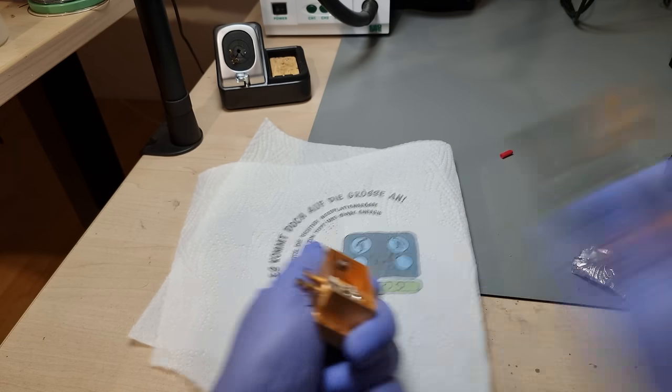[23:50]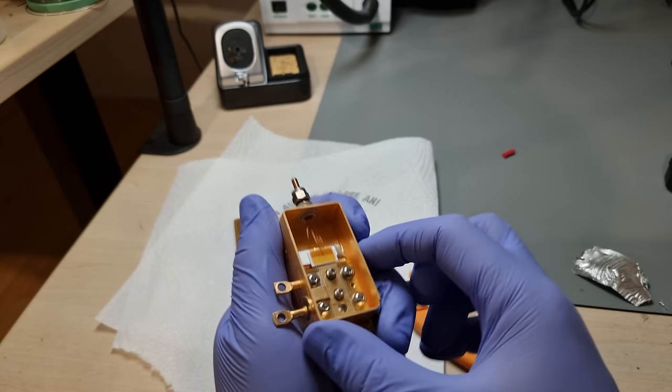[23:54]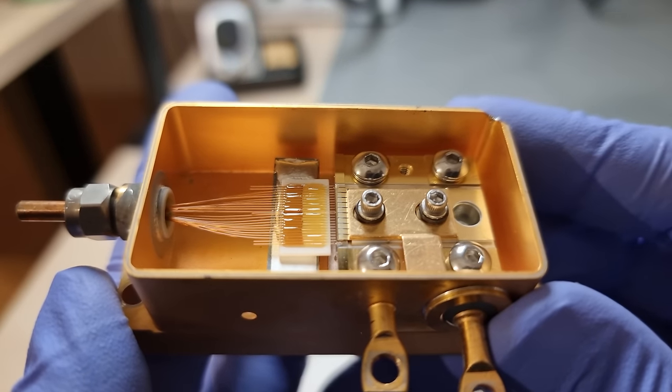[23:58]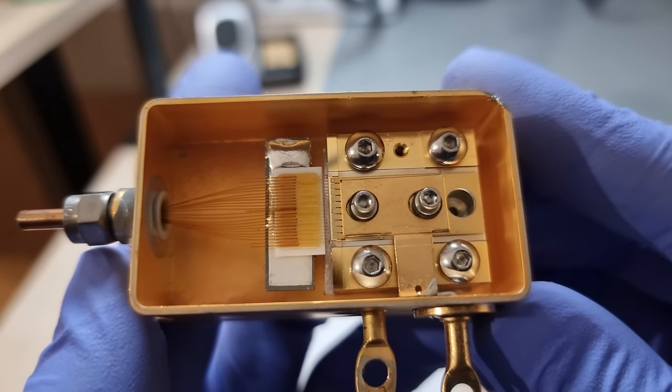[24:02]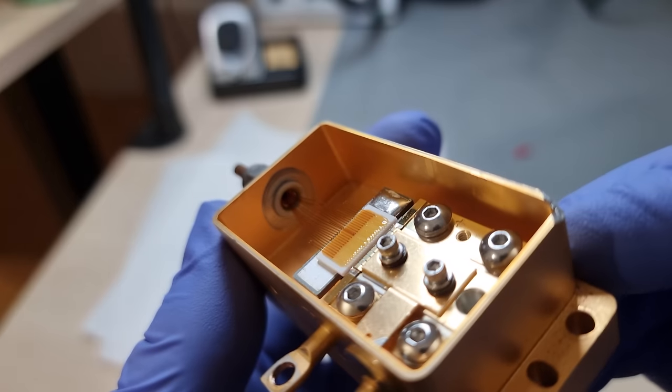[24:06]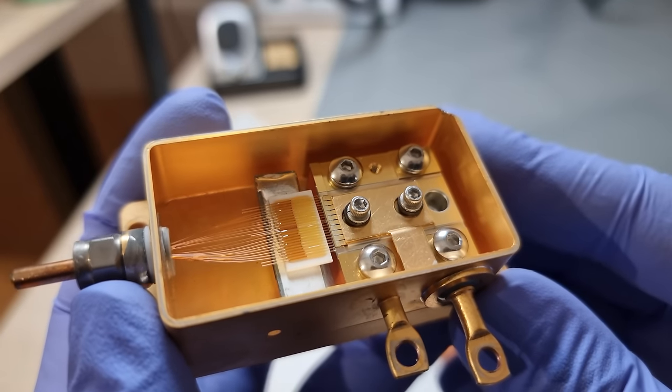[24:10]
The FAP is pretty mundane, at least from my ignorant perspective. They glued a perfectly spaced bundle of fibers onto a piece of ceramic, and then soldered that with indium metal onto a thermally conductive pedestal to point every fiber perfectly into the diode bar, which in turn is clamped on top of a solid copper pedestal.
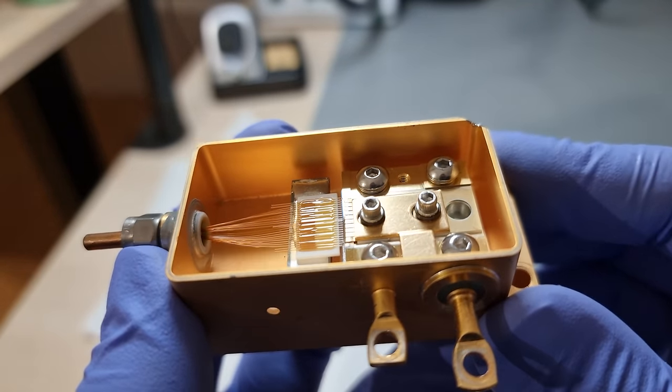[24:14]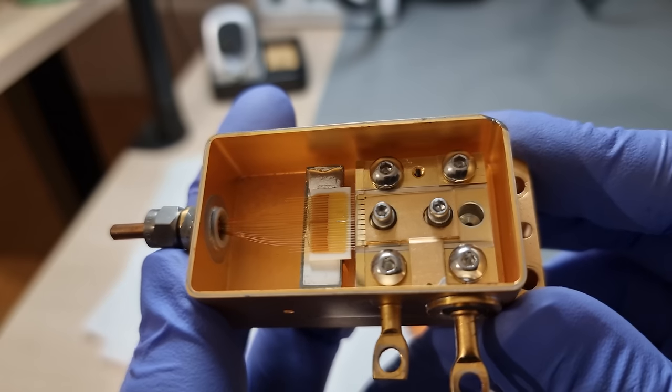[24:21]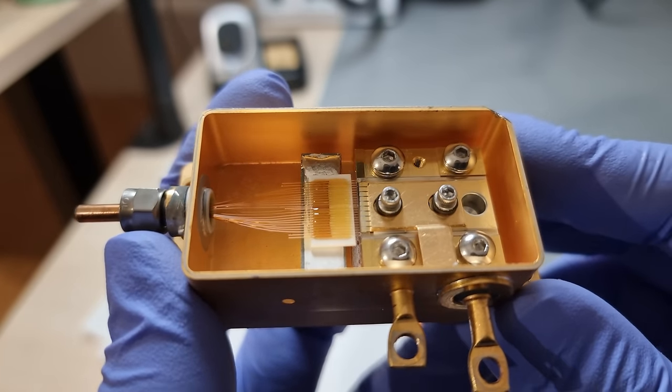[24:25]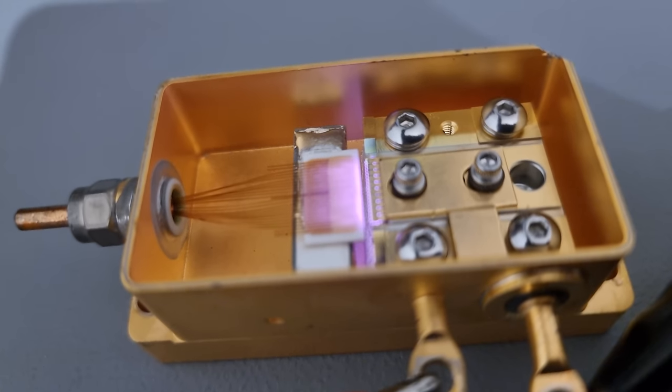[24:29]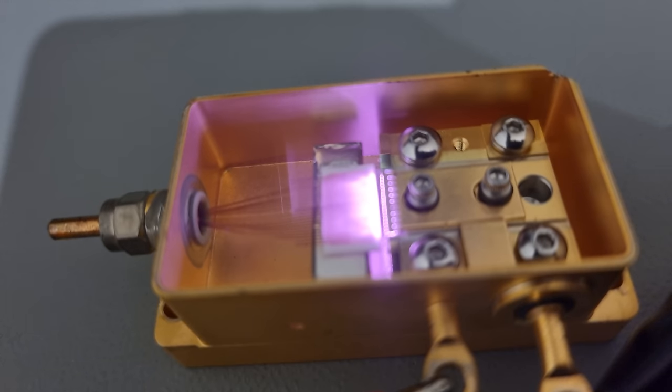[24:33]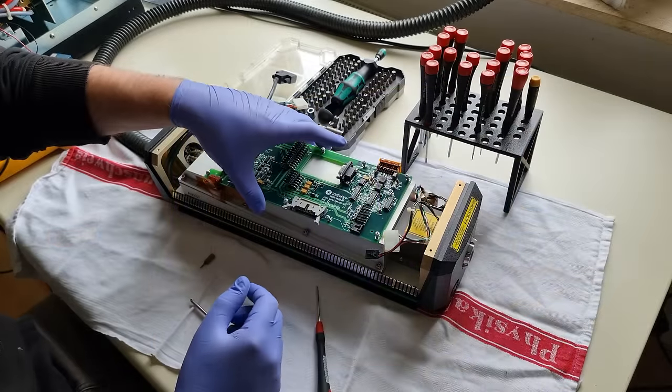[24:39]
To keep this maybe not optimal, but at least operational as per datasheet spec, over a wide temperature range of minus 20 to plus 30 degrees C, there has to be some advanced thermal expansion coefficient material matching going on. If one of these is ever not cooled sufficiently and it reaches the indium melting point near 150 Celsius, it's pretty much game over right away. No built-in power sensor or ESD protection in these. Pretty simple. Unlike this next part, which is the opposite of simple.
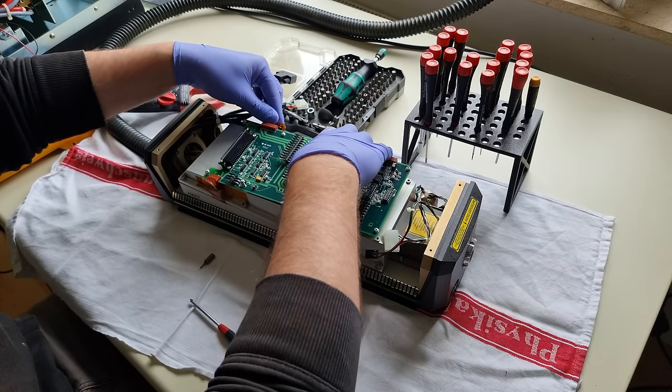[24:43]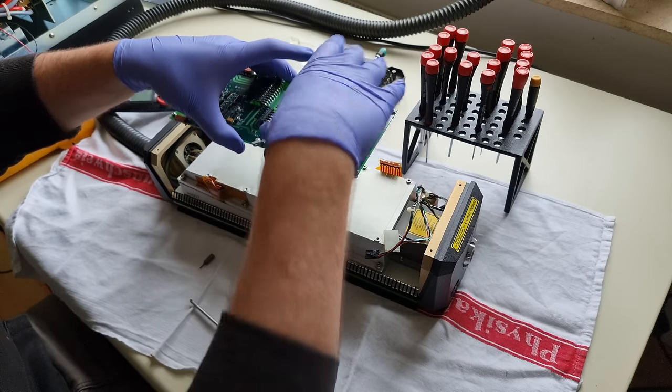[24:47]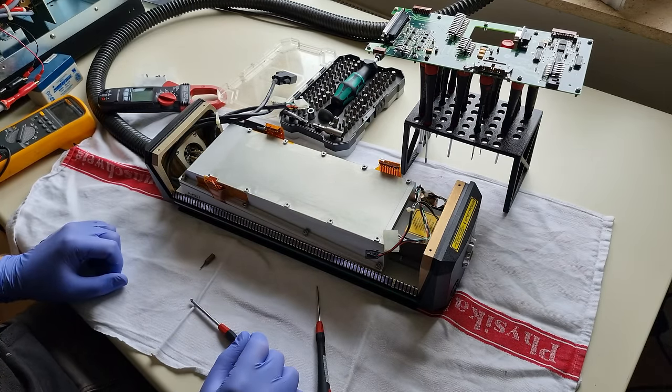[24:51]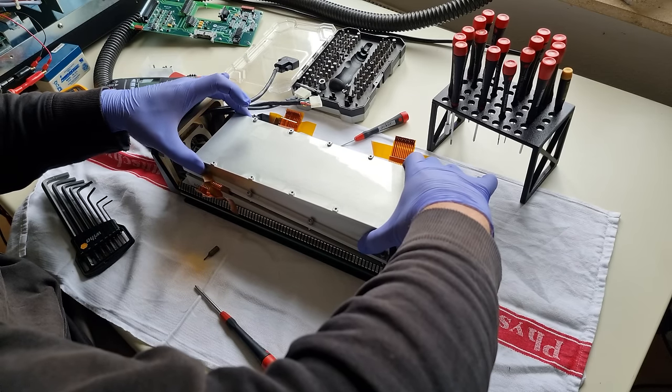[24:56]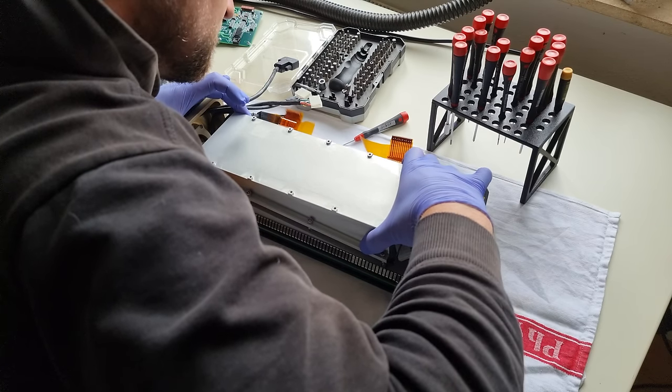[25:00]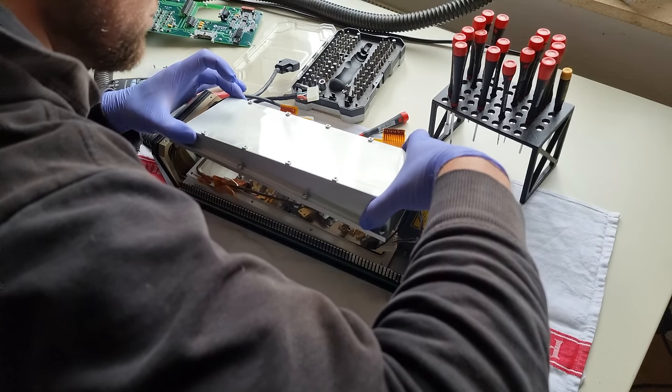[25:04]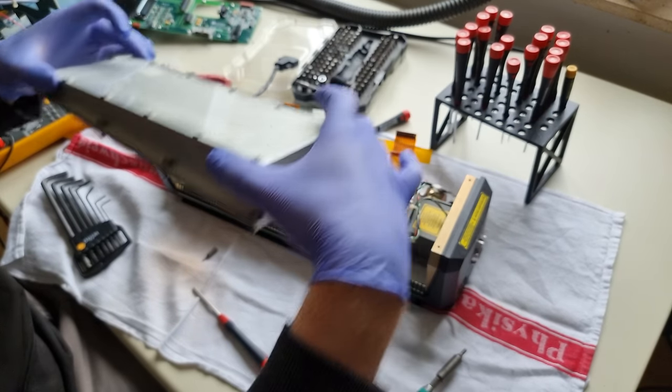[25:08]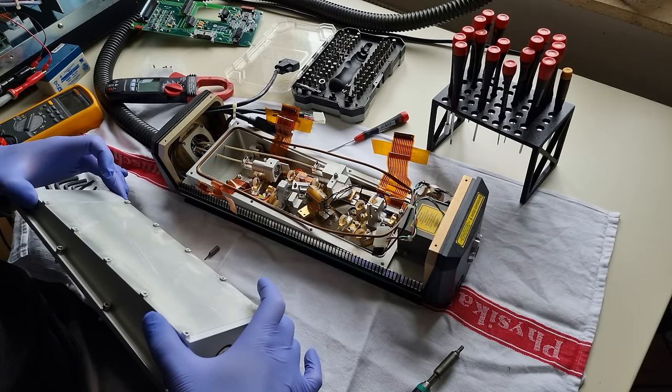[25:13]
I'm not even sure if I should. This is a very valuable piece of kit, even when still broken. And even more so because I have plans for it in future videos. But I've looked up in advance what crystals to expect in here and what properties those might have. None of them seemed hygroscopic, and anyway, there are flat-flex cables penetrating the O-ring seal. So this assembly is nowhere near hermetically sealed, merely dust-proof. I'm going to hurry up, get the shot, and get back out before the dust can settle. That's how that works, right?
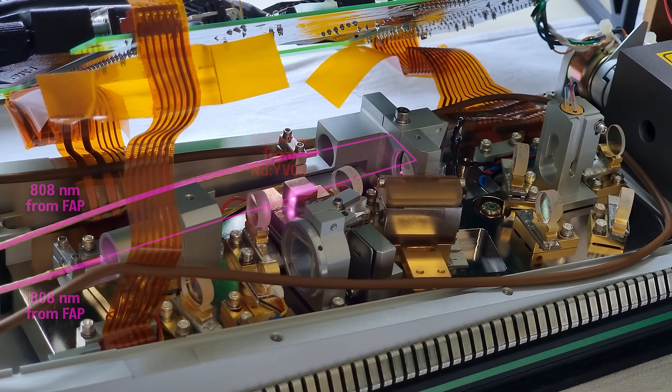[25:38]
So these are the terminated fiber optical cables coming in from the FAPs, delivering their 808 nanometer payload. This one makes a U-turn through prisms, so that both can end-pump this neodymium-doped yttrium orthovanadate crystal. Everybody just calls it Vanadate. It doesn't look like it's doing much because the incoming 808 nanometer light that excites the neodymium ions looks the same on film as the 1064 nanometer light that is re-emitted when the ions return to their ground state. But it is in fact performing the first out of two wavelength conversions in this cavity, and in doing so, it improves the spectral purity of the dirty diode's output a little bit.
The re-emission is going to exit that crystal coaxially with the excitation beams. So in front of and behind it there are dichroic mirrors, highly reflective to 1064 nanometer, and this is actually where the kind of ring laser begins. The 1064 nanometer output that encounters this mirror is redirected into this component, the lithium triborate crystal, the mythical LBO that we've heard so much about.
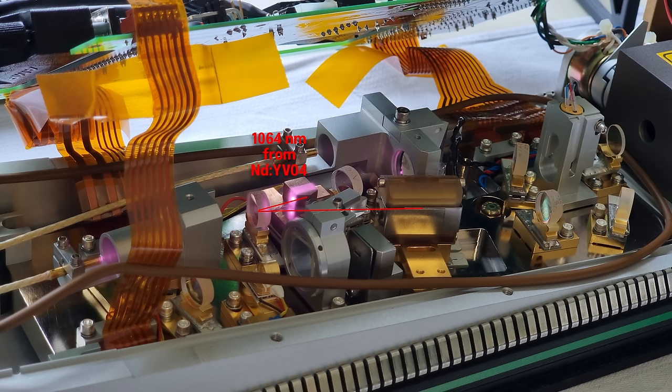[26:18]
If it's in the mood and in its thermal comfort zone, and if some phase-matched photons coincide, it will do its job as the second harmonic generation crystal, allowing two-photon absorptions not too different from the ones I mentioned earlier in this video to take place within it. And that's how a large portion of the light with 1064 nanometer wavelength can be converted into light with exactly half of that wavelength, 532 nanometer. And there we are already. That is the beautiful, green, narrow line width, low noise output that we were after.
The successfully converted green light can pass through this dichroic mirror, gets power measured, and sent off to the output aperture. The unlucky leftovers who haven't found a phase-matched partner are still infrared and get reflected by that dichroic mirror to be recycled. They have to go through this optical one-way valve, about which I might talk your ears off in the next desktop fiber laser engraver video. And then through a precisely temperature-controlled etalon, another opportunity for a lengthy monologue. Let's call it a filter for now that rejects everything but 1064 nanometer. The leftovers go back to our old friend Vanadate and start the journey anew.
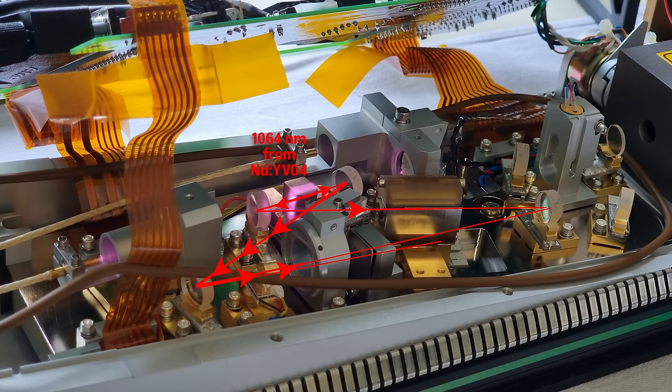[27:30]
One concern that one might raise is that Vanadate kind of has two outputs. It could lase in what we know is the wrong direction and waste half of its power heating up the optical one-way valve. Luckily, the recycling mechanism slightly favors unidirectional operation. And as far as I understand it, there is a kind of peer pressure among photons that causes near perfect unidirectional operation and negligible losses in the optical isolator.
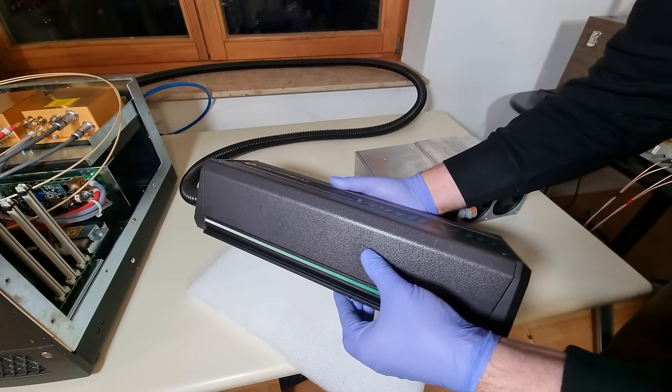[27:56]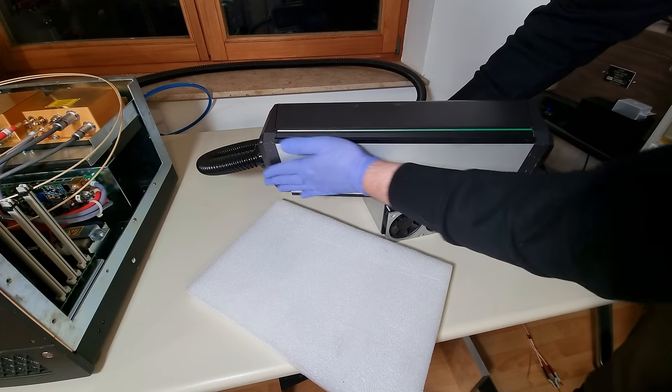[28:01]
You have selected Microsoft Sam as the computer's default voice.
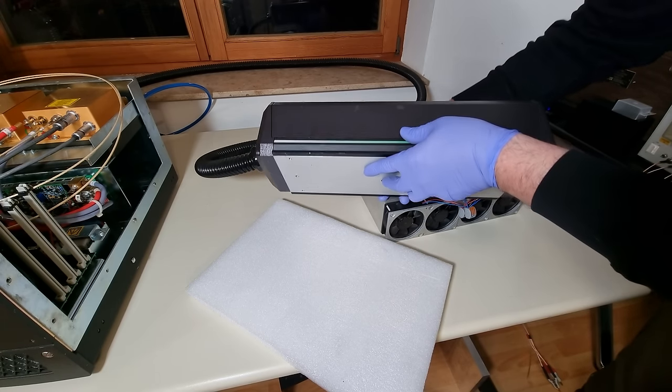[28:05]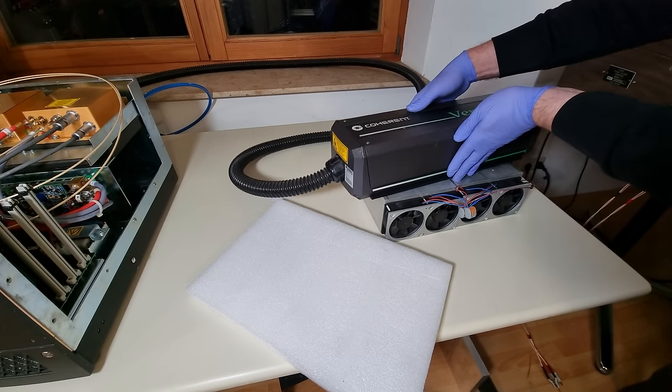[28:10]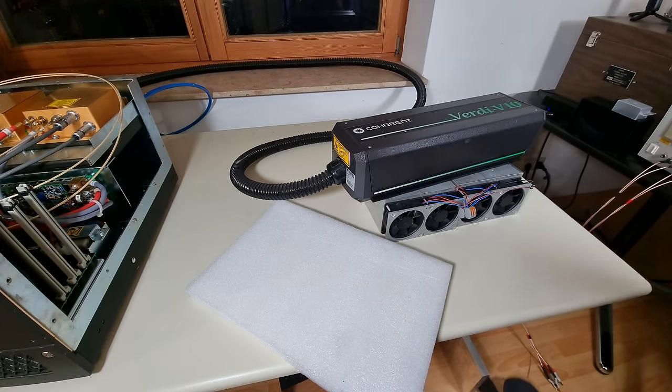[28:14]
Yeah, sounds like the head would be running the show pretty efficiently. It kind of is, to be honest, but it's a smallish device that needs to dissipate more heat in operation than it can passively. So while I don't have a nice metallic optical bench, I'm going to put it on these cooling aggregates which should do the job.
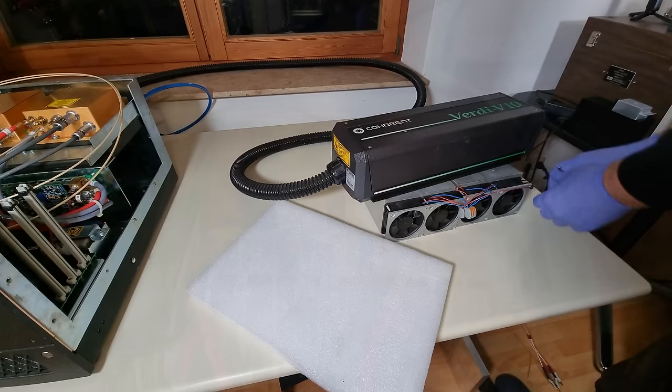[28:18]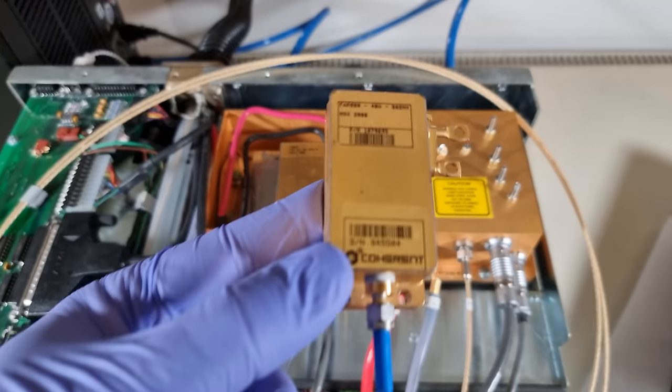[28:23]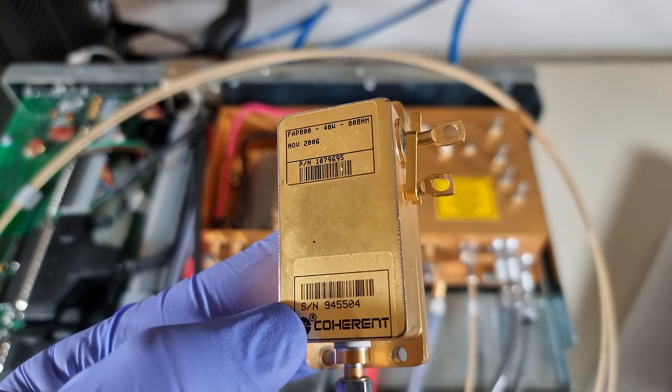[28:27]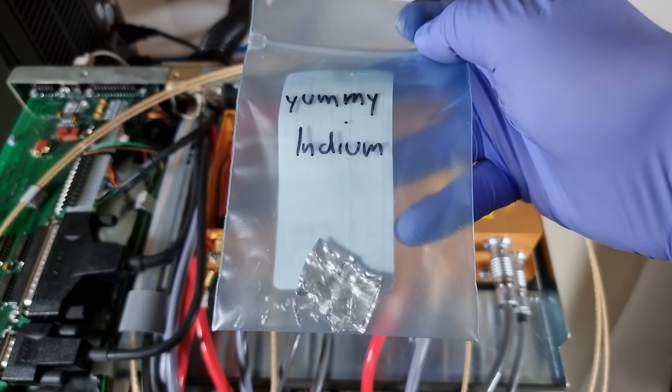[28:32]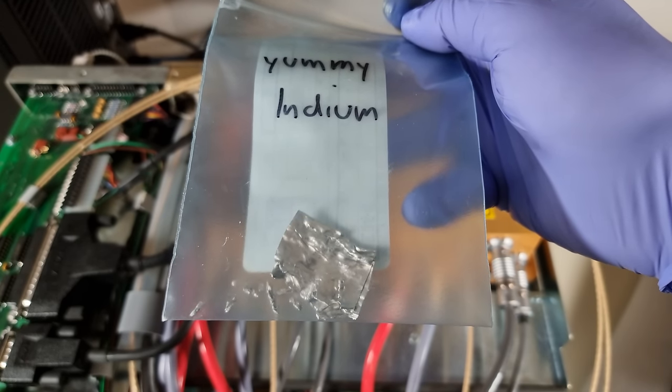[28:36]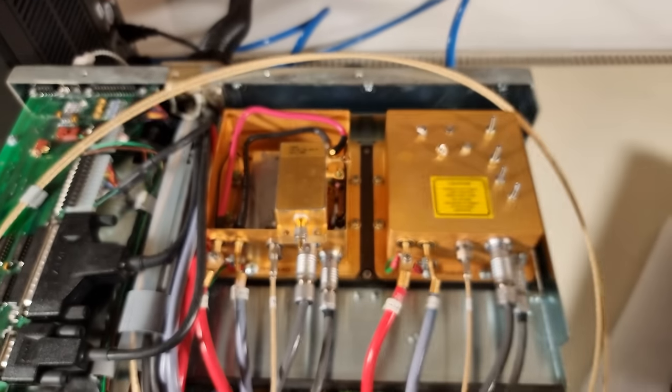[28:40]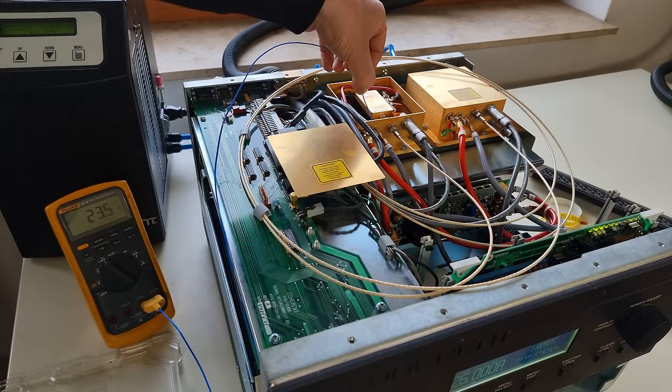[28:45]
Meanwhile, my replacement eBay FAP has arrived. I went with the cheapest one for 80 bucks and it looks the part. I was confident but not completely sure that it would make a difference, so I didn't want to commit to a big investment. For similar reasons, I also didn't buy new indium foil as thermal interface material. But that was a mistake. Turns out Coherent uses 20 bucks worth of precious metal foil for a reason. Their diode packages actually have a pretty rough surface finish, so direct metal-to-metal contact would not work well.
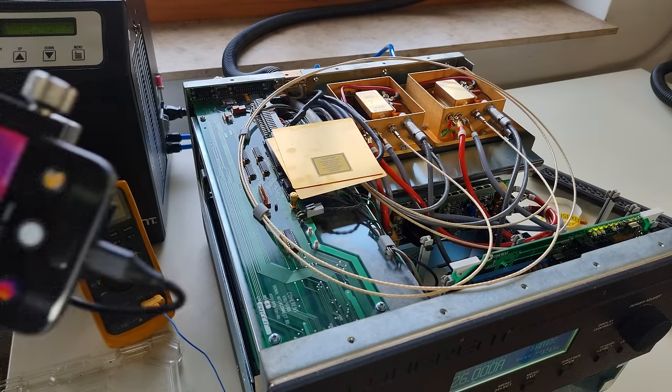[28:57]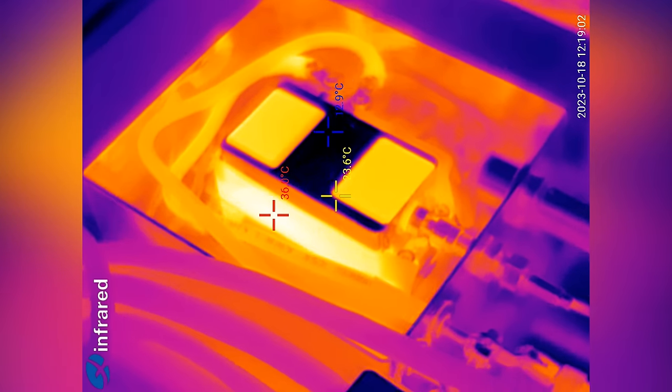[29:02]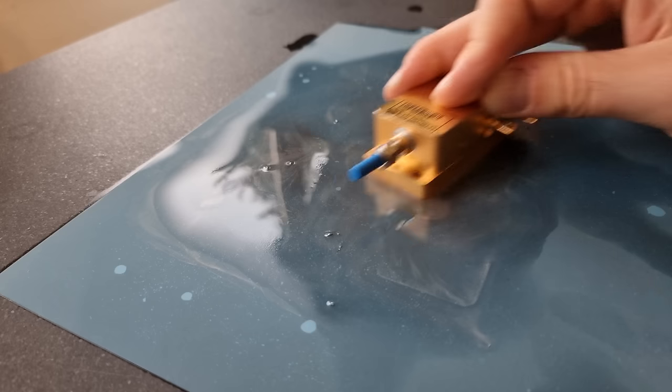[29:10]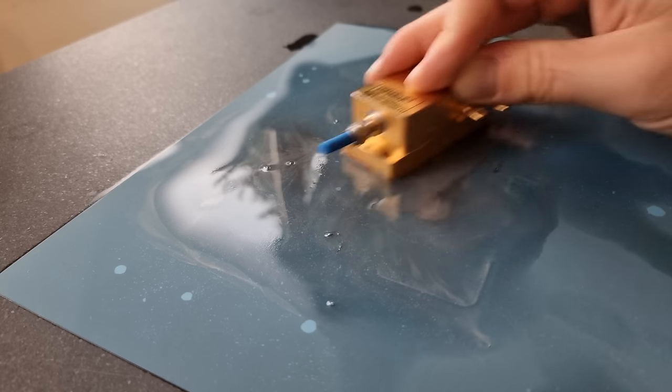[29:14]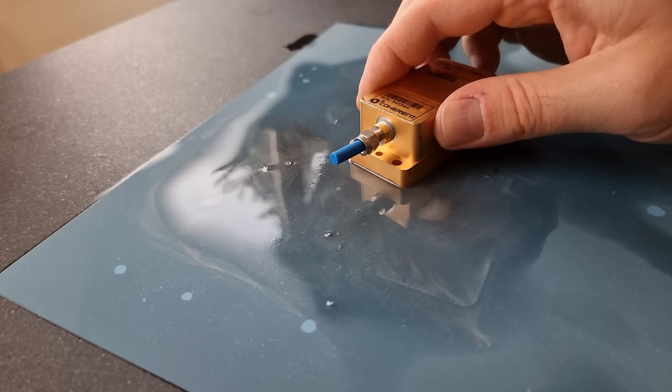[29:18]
I applied what I thought was a high-performance thermal interface material between the new FAP and its Peltier base. That led to a whopping 15 degrees C temperature delta between the two. Basically, I created a large, current-dependent temperature variable in the system that isn't even seen by any sensor, and neither by me at first. So that created some weird, confusing behavior immediately after the swap, but I remembered an old skill from my teenager computer tuning phase. Never thought I'd have to lap a FAP someday.
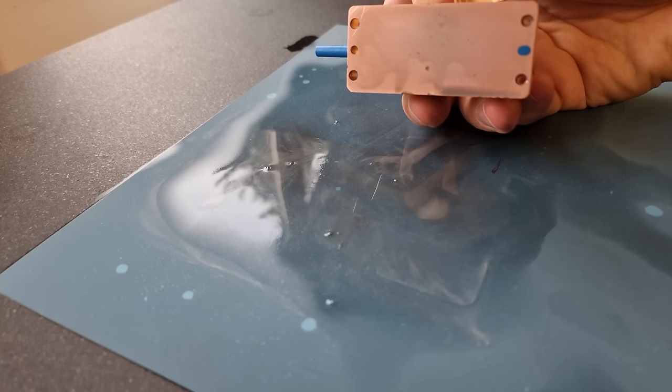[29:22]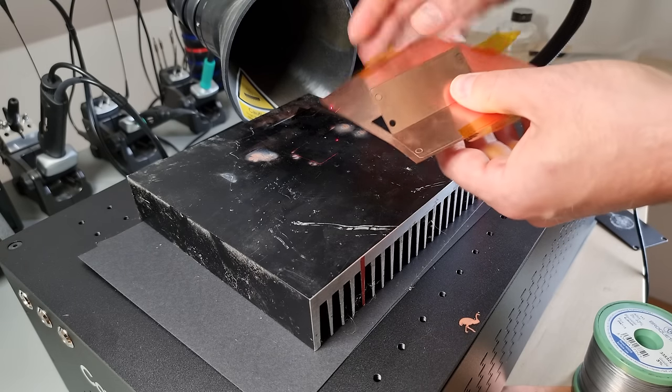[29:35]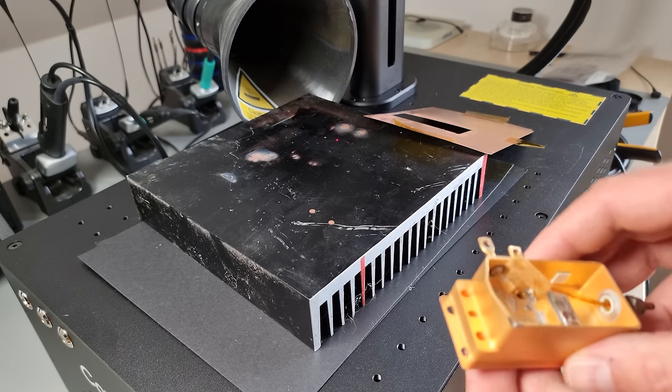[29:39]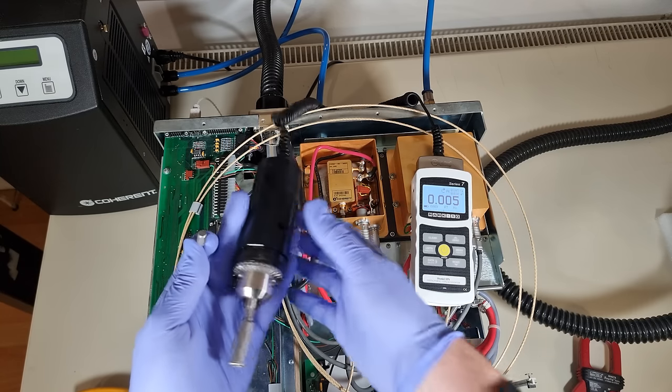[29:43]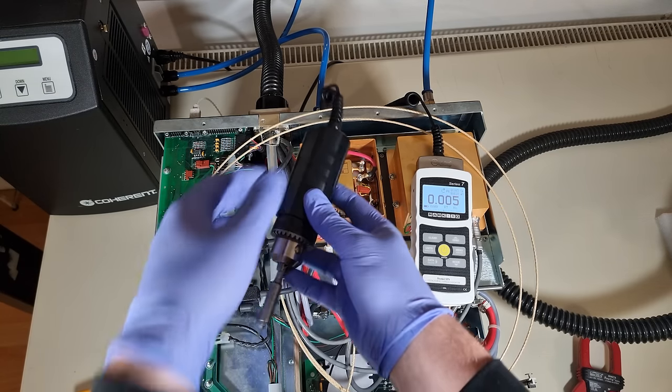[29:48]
To make up for the missing height and allow for a stress-free installation of the FAP into its surroundings, I made a hopefully superbly thermally conductive 0.2 mm copper shim. Or is it just an excuse to show off this new toy? Perhaps. I don't think I've achieved atomically perfect surfaces here that are at risk of cold welding at the next best opportunity. So I've applied a small amount of thermal compound too.
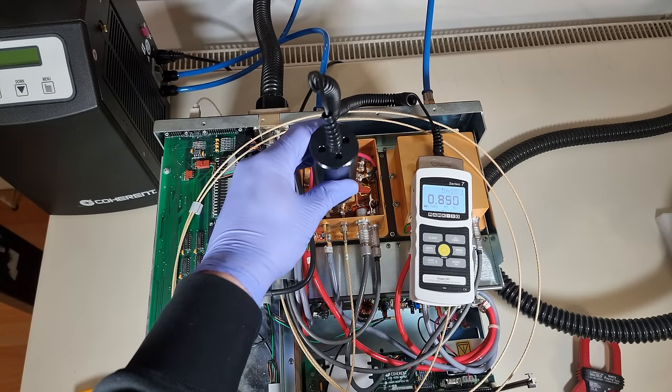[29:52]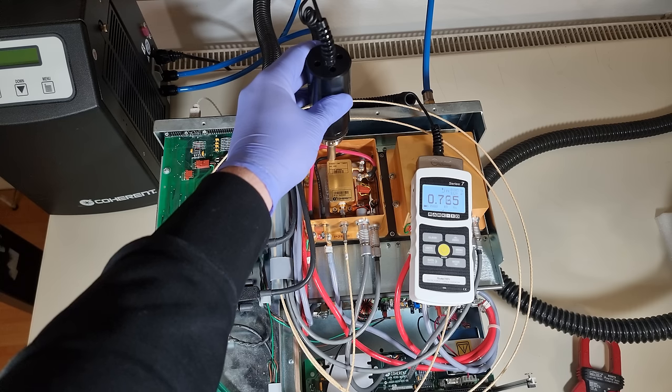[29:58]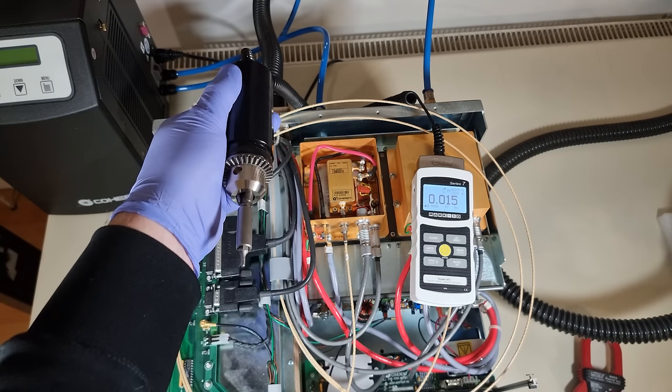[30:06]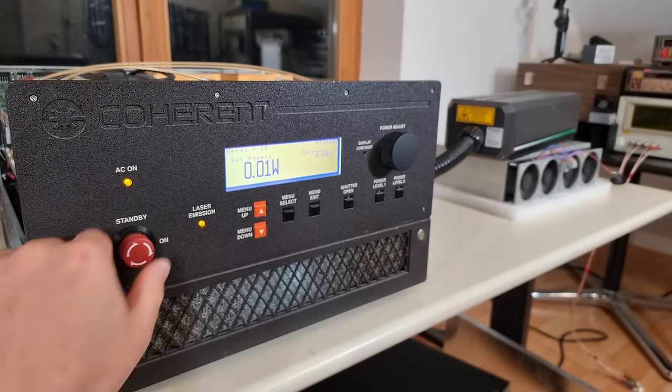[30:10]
To spread that out nice and evenly, I'm trying to apply equal mounting pressure crosswise. With a compliant thermal interface material such as indium foil, this would absolutely be the most crucial step. With flattish metal surfaces and a bit of paste, oh well, it can't hurt. What matters is that after installing pumping diode 2 on this shim, I started seeing negligible temperature differences, so mission accomplished and no delicious indium wasted.
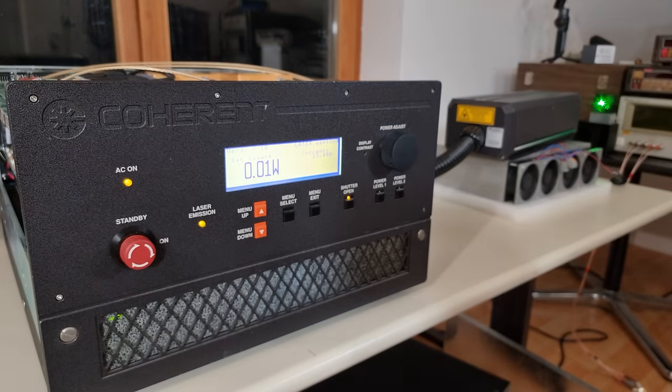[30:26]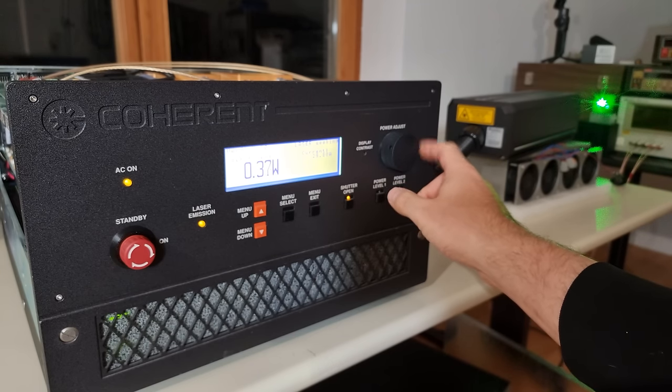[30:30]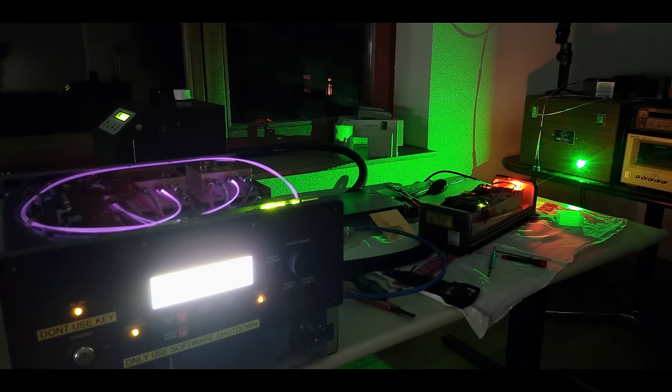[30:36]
And then, with minimal servo loop fine-tuning, I finally saw the green glimmer of hope, the auspicious emerald dawn that I had hoped for all this time. And more than that, actually. I tried a little bit of temperature optimization, but it's kind of a six-dimensional problem with many possible solutions. And every parameter change needs a while to settle down and take effect.
On this day, I ended up reaching something between 7 and 8 watt green output power. But beyond that, the control loop starts running away to excessive currents, while the output power only keeps falling. That might simply require better fine-tuning, or there might still be a subtle hardware problem somewhere. We'll figure it out. This is all I could have asked for now.
7 watts of green light is impressive and scary. Scary because human eyes tend to have a sensitivity peak at green wavelengths. So it's rather noticeable how much 7 watt of power is and how much of my room it illuminates. Meanwhile, the fiber laser engraver from a minute ago can put out nearly 10 times as many watts, only of the invisible variety, but just as unfriendly to our retinas.
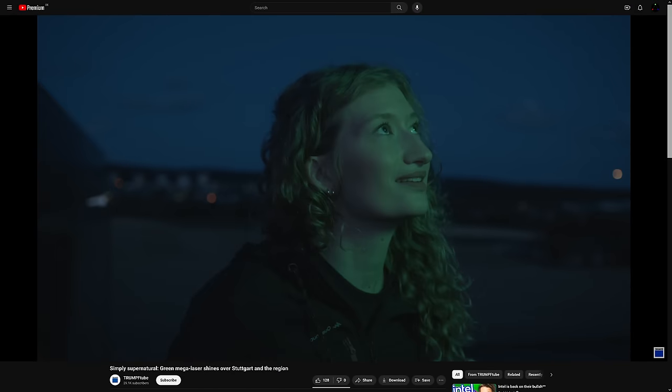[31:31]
Soon above RepsLab's HQ, one small trick that pilots and law enforcement don't want you to know.
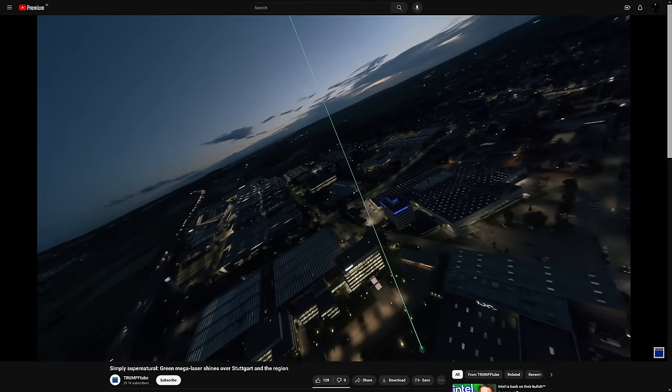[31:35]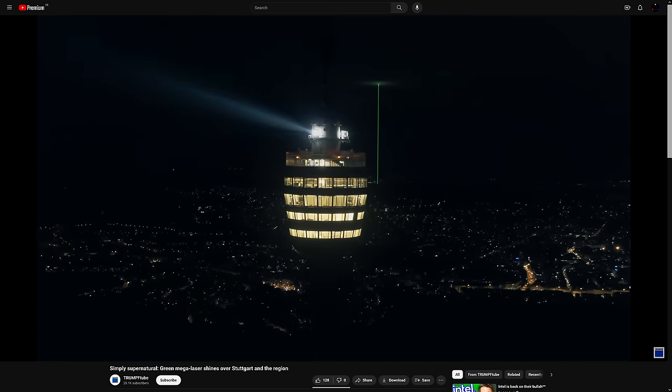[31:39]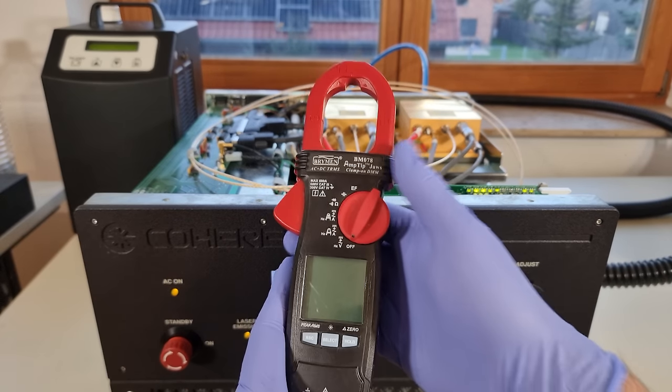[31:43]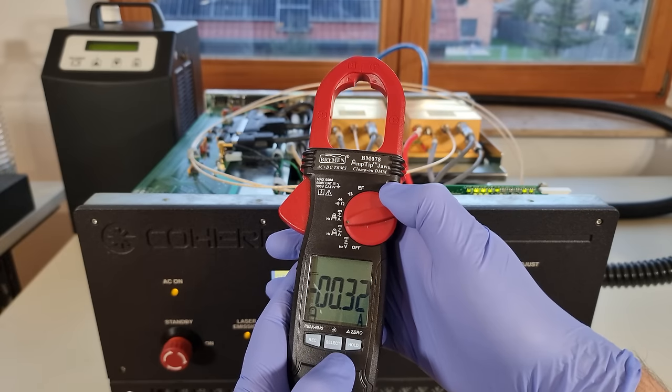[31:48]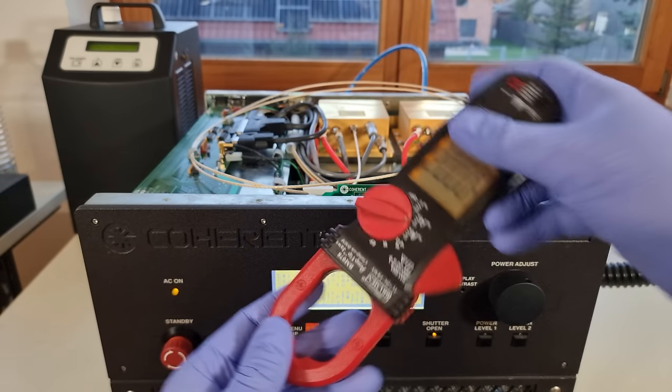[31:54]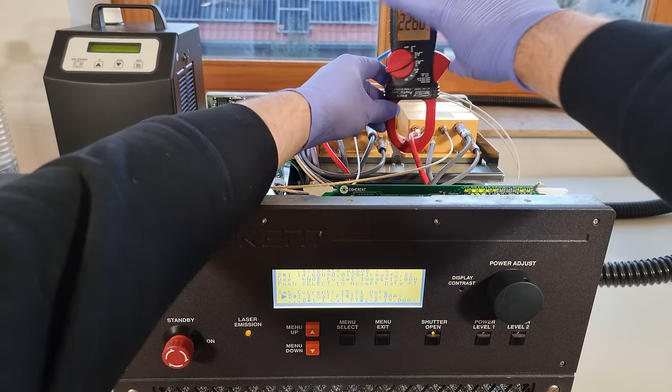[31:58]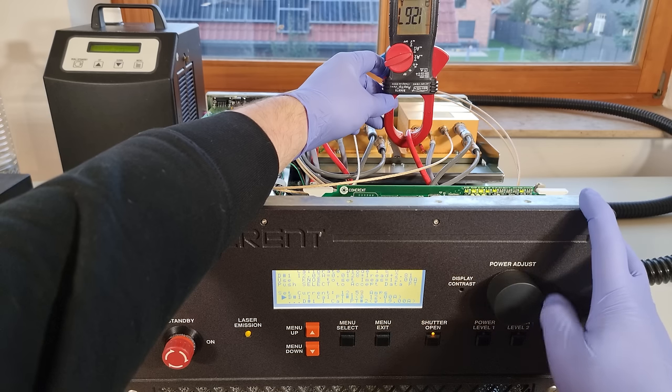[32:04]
As hypothesized earlier, diode currents in the system might be estimated based on their forward voltage drops. After dropping in a new diode and giving it a new temperature set point, it seems like a good idea to perform a voltage and current calibration. It may look strange adjusting this stately, imposing laser system to the second cheapest clamp meter in Brymen's portfolio. I'm not concerned. BM078 has been perfectly reliable down to the least significant digit.
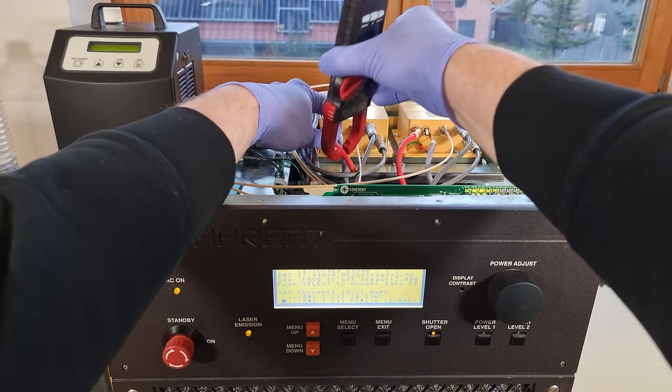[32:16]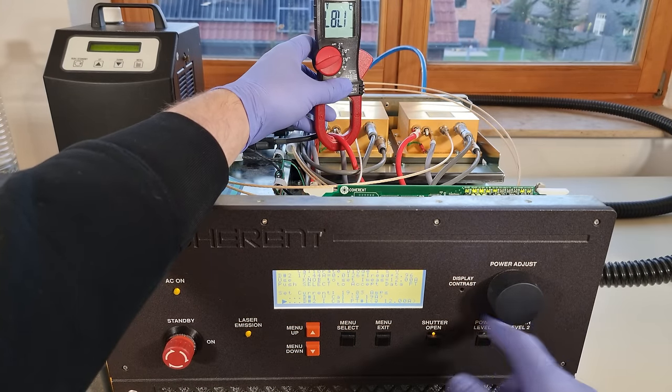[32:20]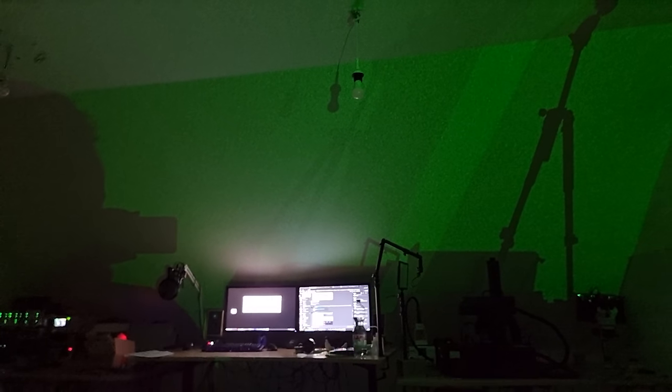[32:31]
And here's the next confirmation. It agrees perfectly with what original diode 1 has been adjusted to. As expected, the new FAP could do with a bit of tweaking, which I'll accept and memorize here. Actually, I think the pump parameters are stored separately in EEPROMs on little personality boards. Those don't seem rewritable from within the menu, and the changes will be forgotten with a power cycle.
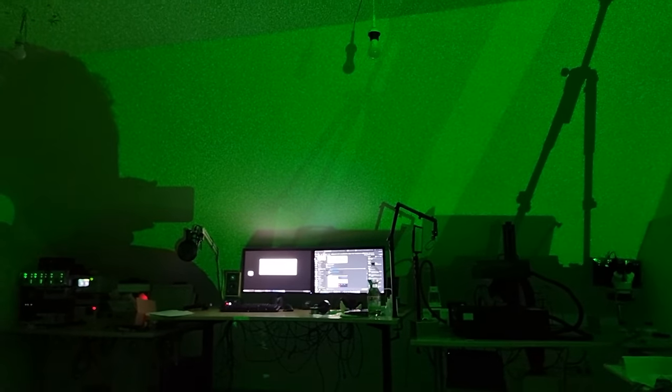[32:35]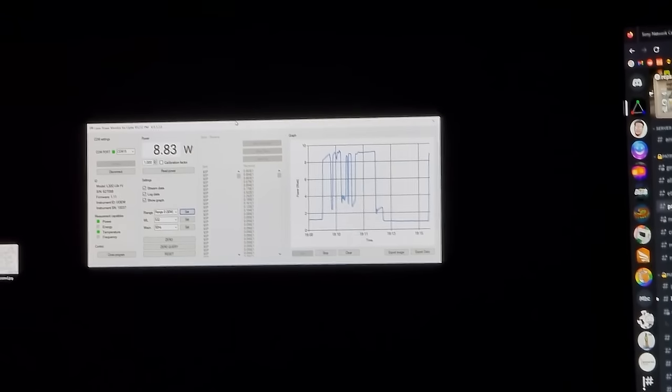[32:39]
With this adjustment done and pump currents now equal, I was able to beat my output power record yet again. Holy moly, bet I could also beat Darth Vader with this thing. That'll give the nosy neighbors something to stew over too. Love it.
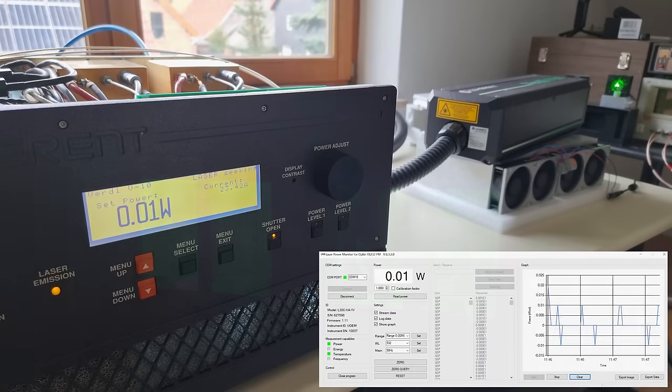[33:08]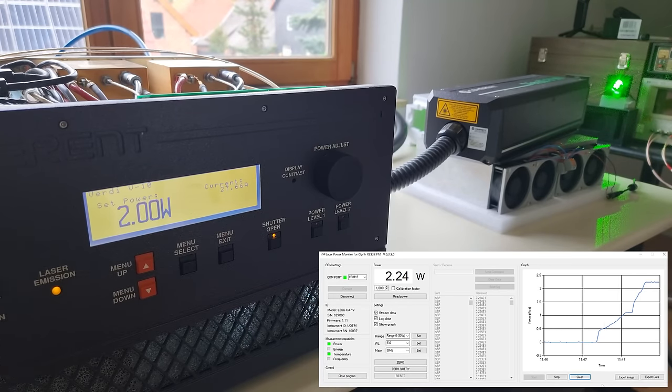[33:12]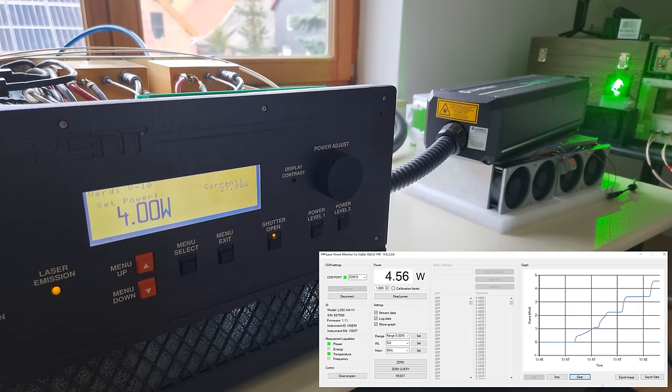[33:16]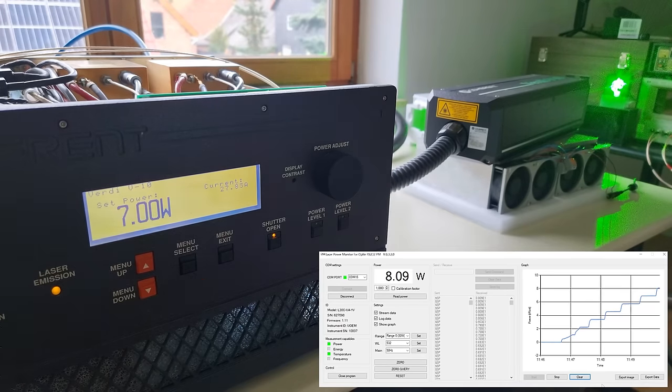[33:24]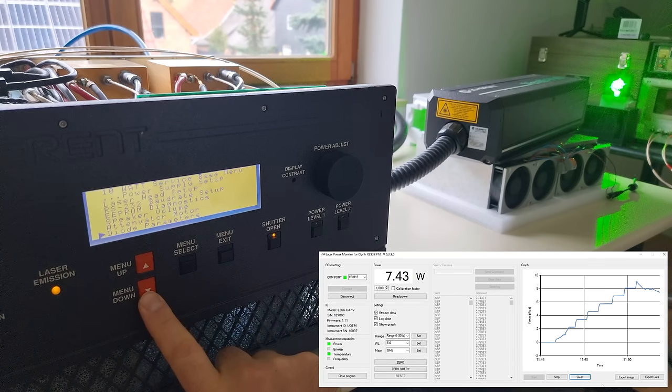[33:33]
There seems to be a bit of gain error in the built-in photocell power sensor, based on which Verdi tries to adjust its output power. Maybe that is why it still can't make it all the way to 10? It aims too high, fails, and then tries to make up for it with excessive diode currents? Not sure, but this runaway behavior near max output power persists. So I think I'll try to adjust that photocell next.
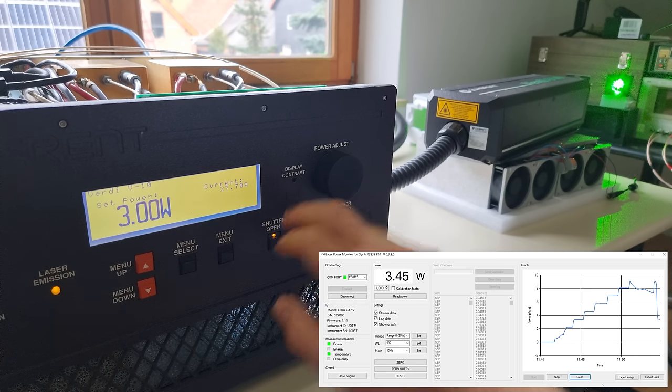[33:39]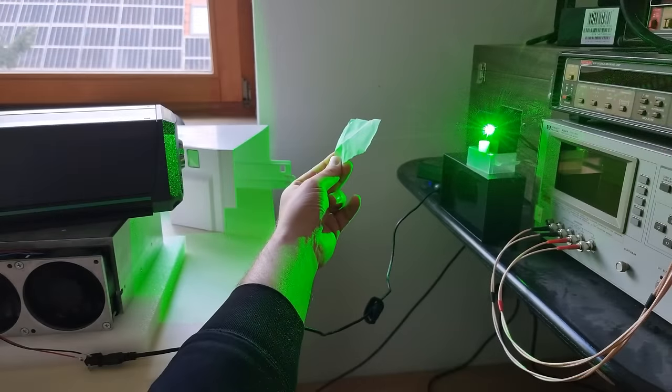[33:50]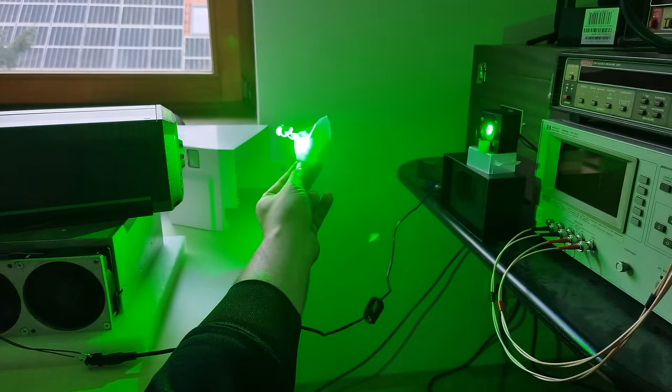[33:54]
However, this might also be a sign that something is still not quite right. According to the Verdi user manual, these photocells that supervise the pumping powers should only be at 2.5 volt at their maximum power. So maybe we do have some abnormal losses in the cavity. But this is the end of the video. I'm calling it a success because this can't be argued with.